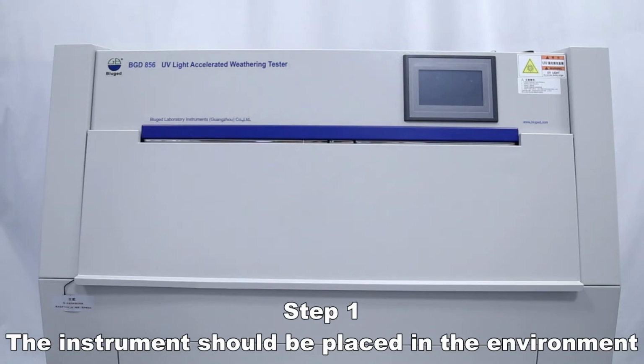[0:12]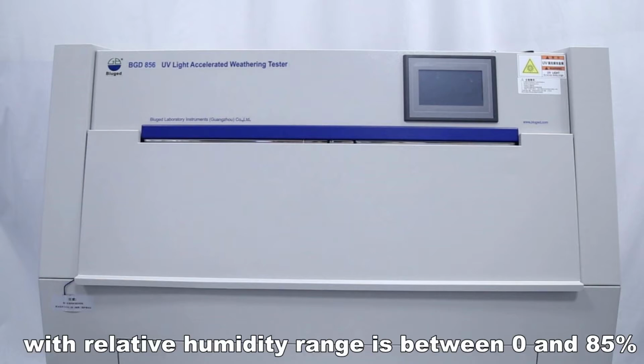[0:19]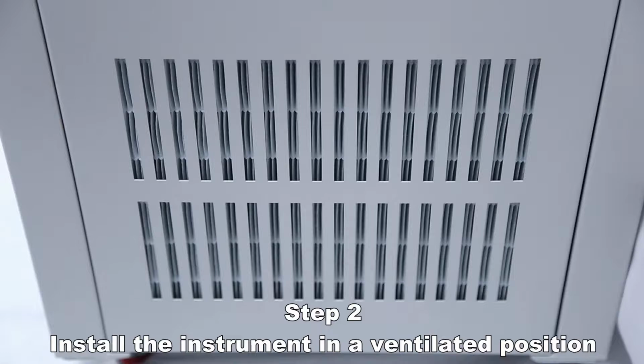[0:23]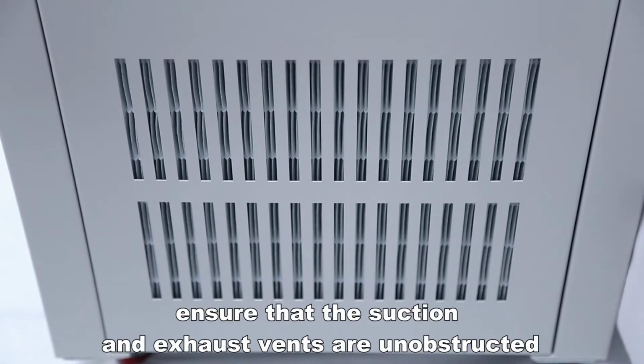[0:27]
The instrument should be placed in an environment whose temperature is between 20 degrees Celsius and 30 degrees Celsius, with relative humidity between 0 and 85%. Install the instrument in a ventilated position. Ensure that the suction and exhaust vents are unobstructed.
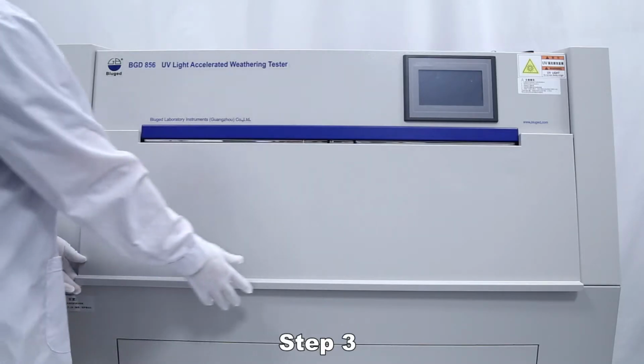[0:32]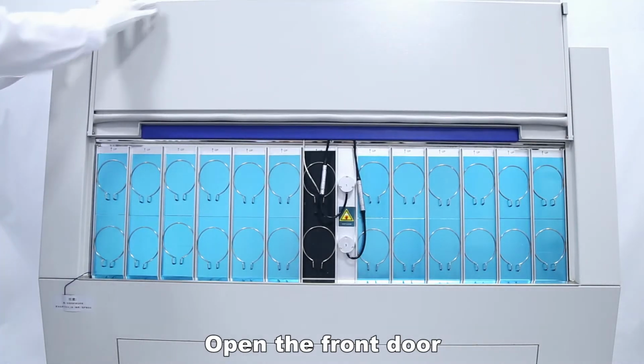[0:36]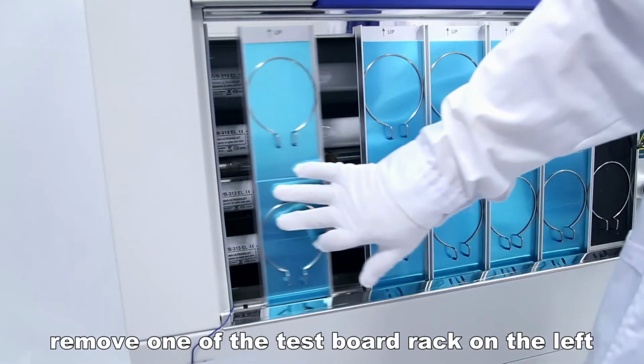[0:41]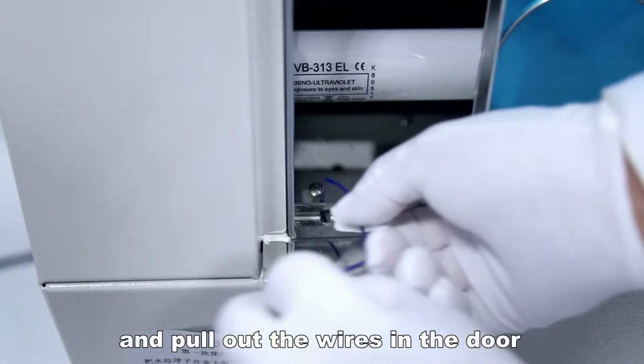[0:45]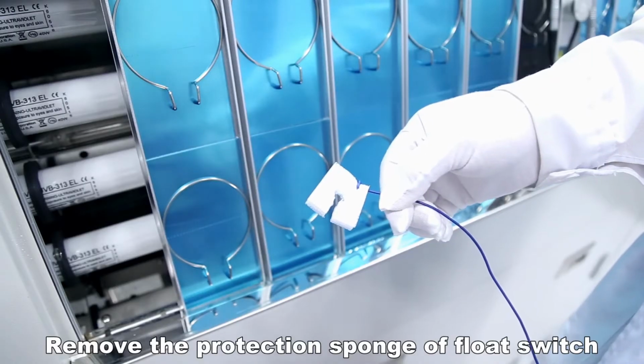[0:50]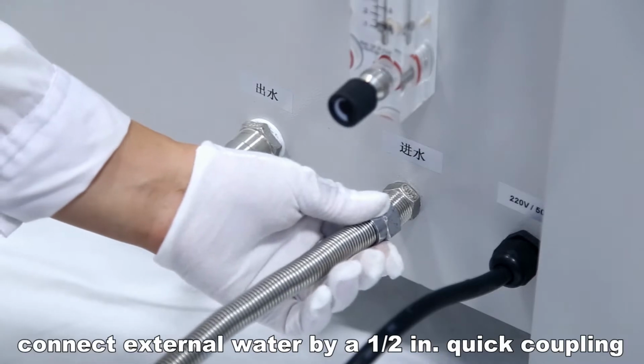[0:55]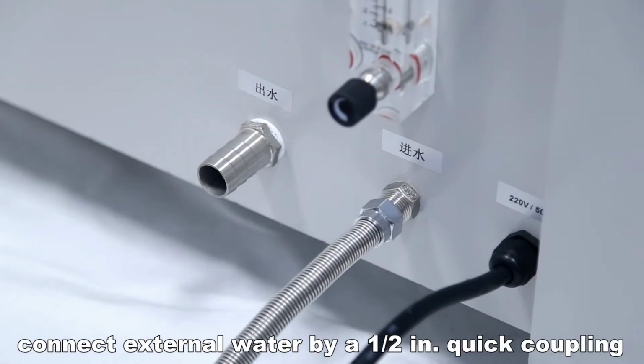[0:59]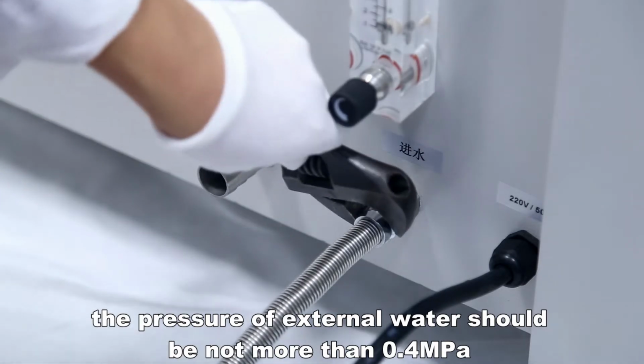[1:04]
Open the front door. Remove one of the test board racks on the left and pull out the wires in the door. Remove the protection sponge of the float switch. Connect the inlet pipe. Connect external water via a 1/2 inch quick coupling. The pressure of external water should be not more than 0.4 MPa.
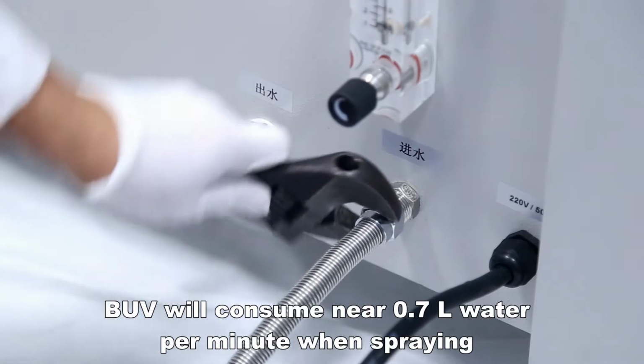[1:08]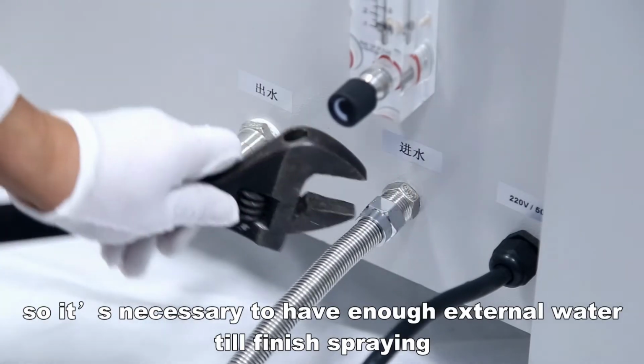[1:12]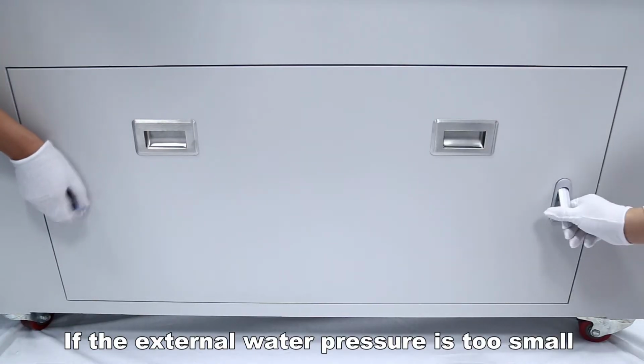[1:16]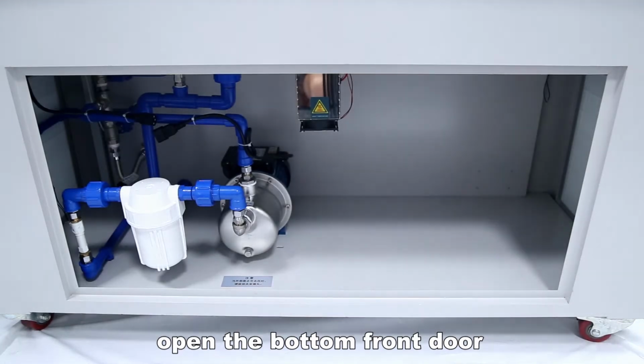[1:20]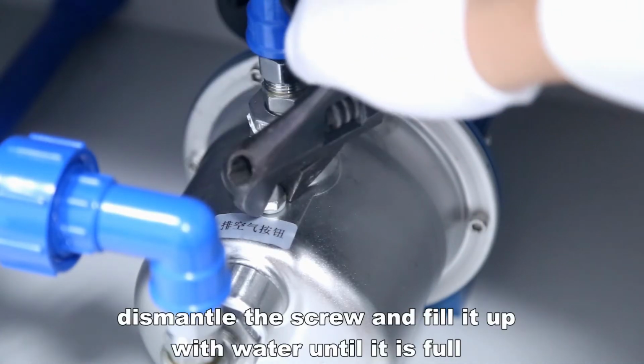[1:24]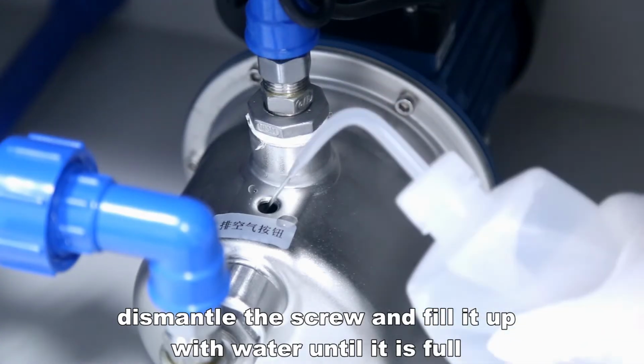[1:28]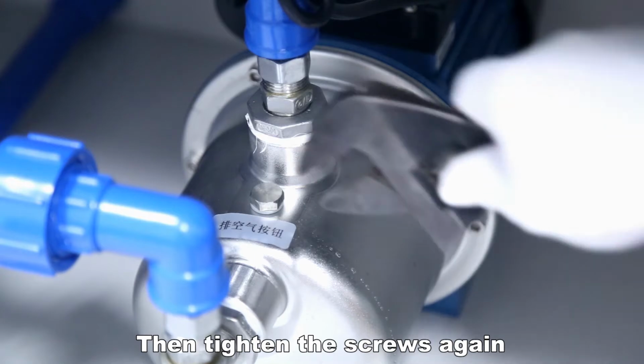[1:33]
The instrument will consume nearly 0.7 liters of water per minute when spraying, so it's necessary to have enough external water until spraying finishes. If the external water pressure is too small, open the bottom front door. Empty all air in the pump before pumping water. Dismantle the screw and fill it up with water until it is full. Then tighten the screws again.
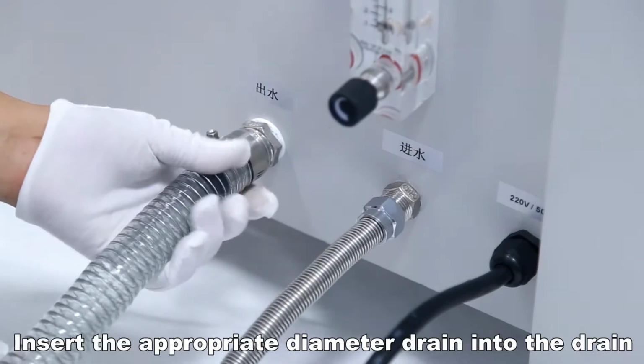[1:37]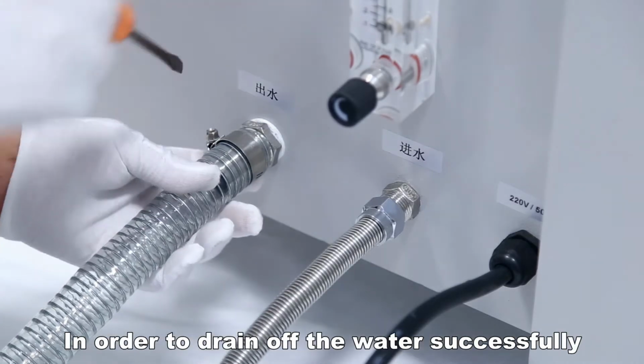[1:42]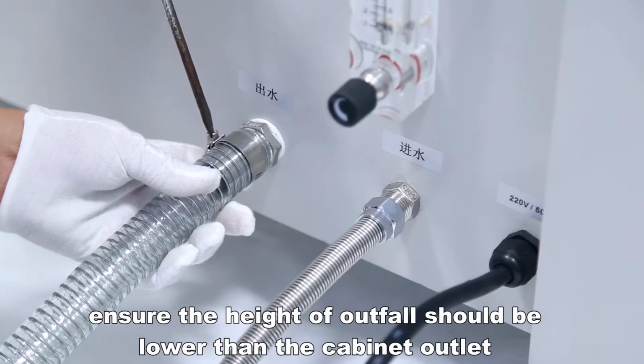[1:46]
Insert a drain pipe of appropriate diameter into the drain in order to drain off the water successfully. Ensure the height of the outfall is lower than the cabinet outlet.
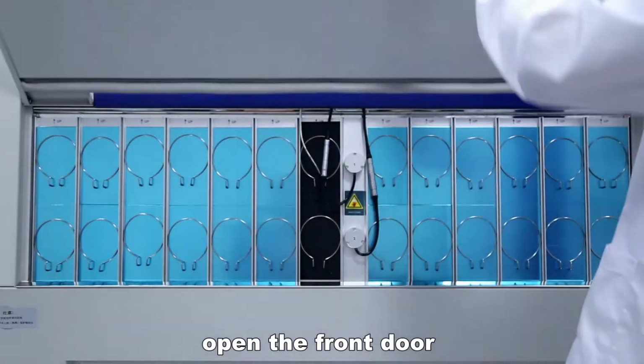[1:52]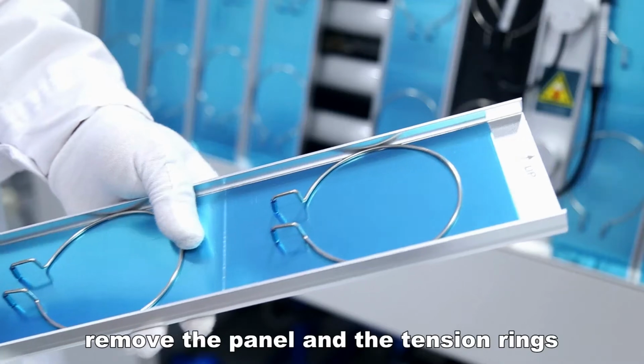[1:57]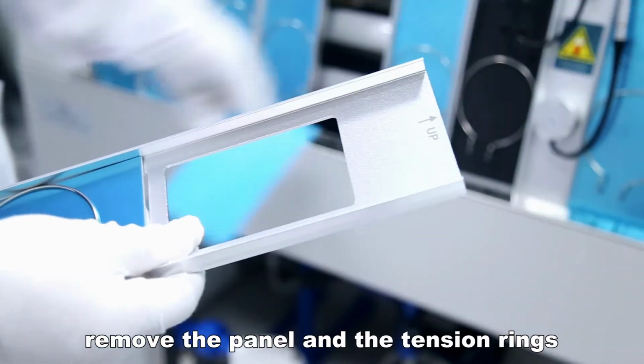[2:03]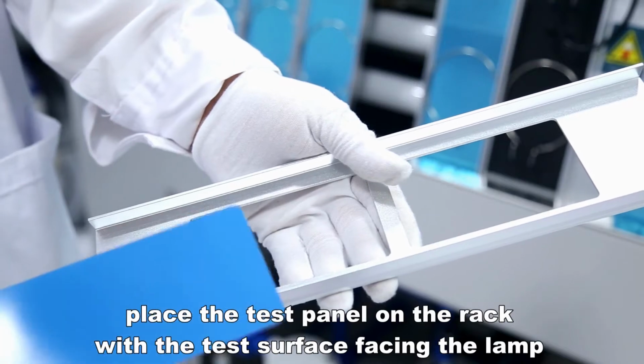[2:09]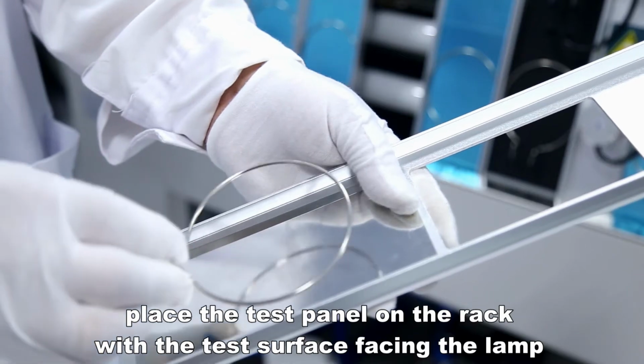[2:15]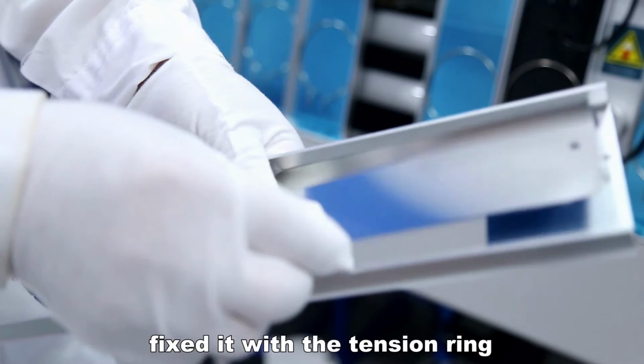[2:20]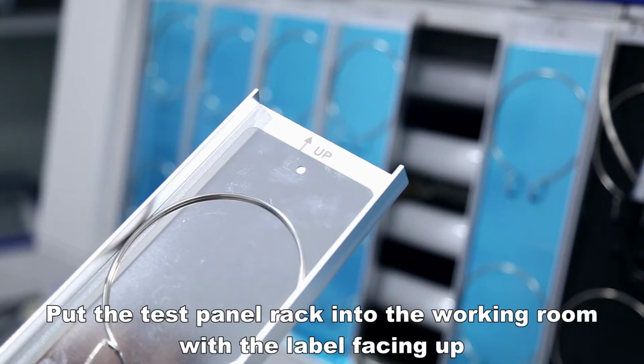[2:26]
Test panel installation. Open the front door. Take out the test panel rack. Remove the panel and the tension rings. Place the test panel on the rack with the test surface facing the lamp. Fix it with the tension ring. Put the test panel rack into the working room with the label facing up.
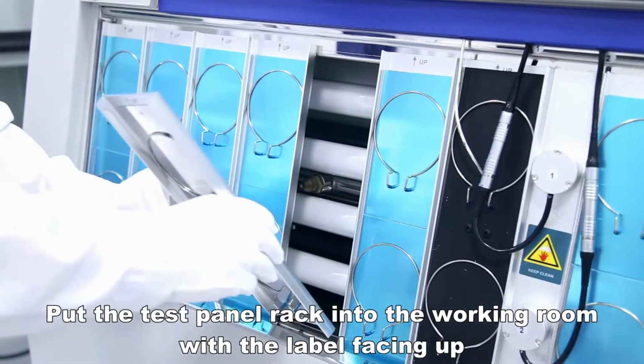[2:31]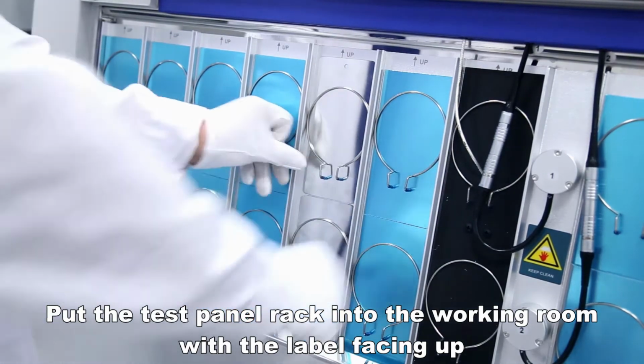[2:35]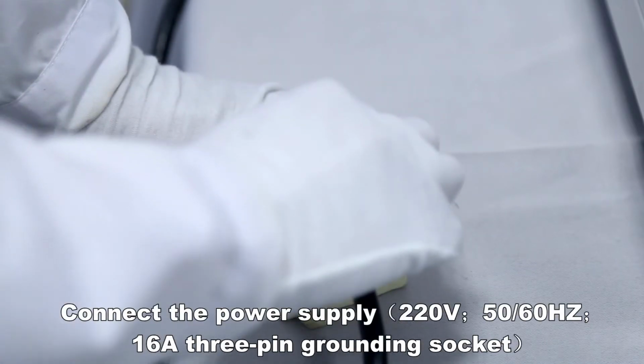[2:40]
After all the test boards are installed, connect the power supply. Make sure the power supply is well grounded.
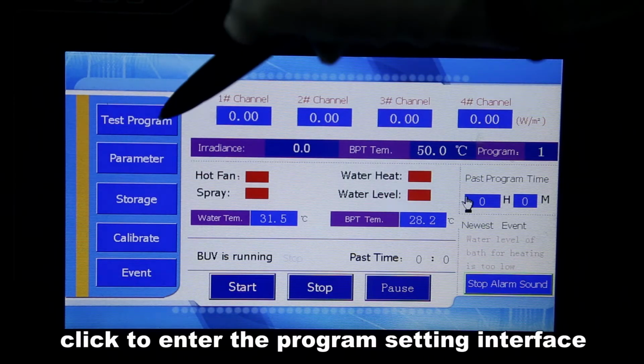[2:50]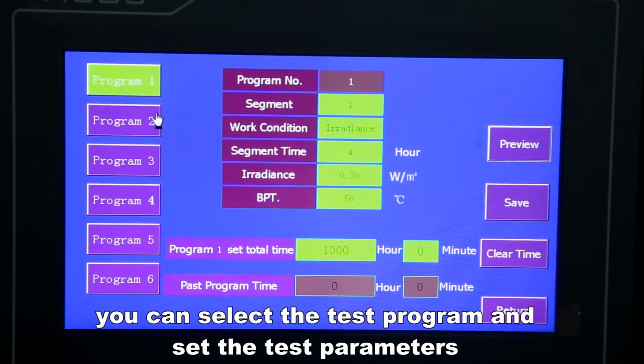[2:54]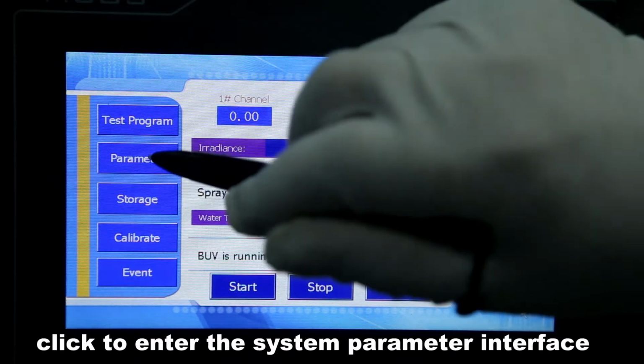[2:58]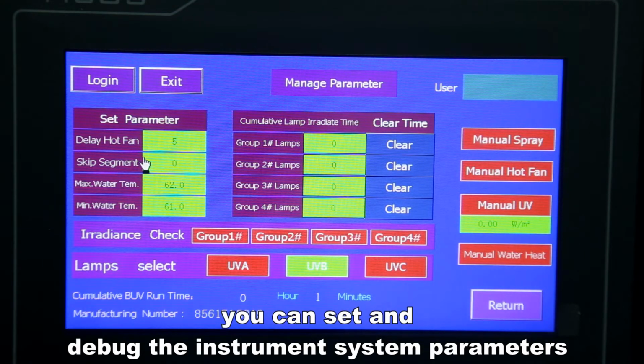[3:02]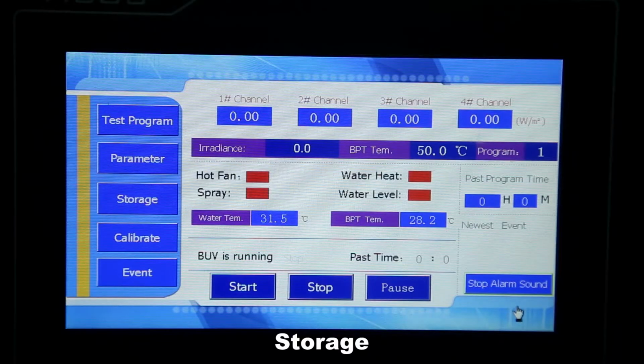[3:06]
Test program. Click to enter the program setting interface. You can select the test program and set the test parameters. Parameter. Click to enter the system parameter interface. You can set and debug the instrument system parameters, and you need to operate under the guidance of professionals.
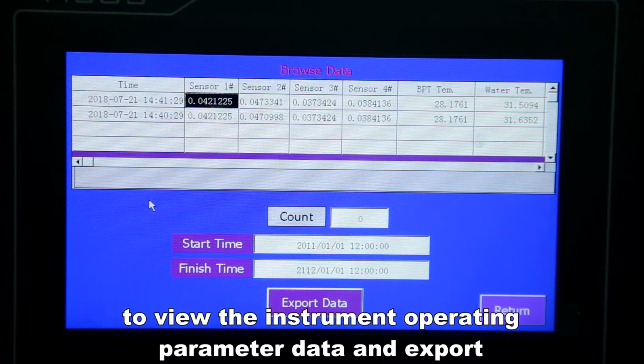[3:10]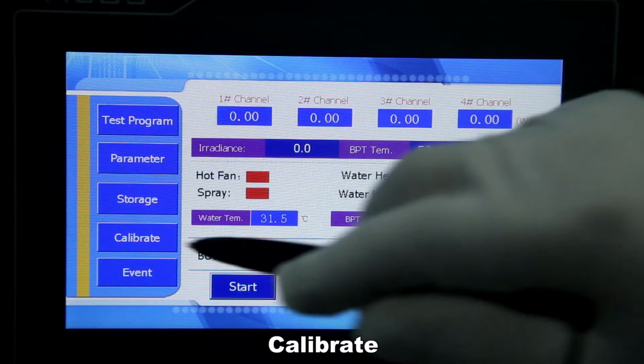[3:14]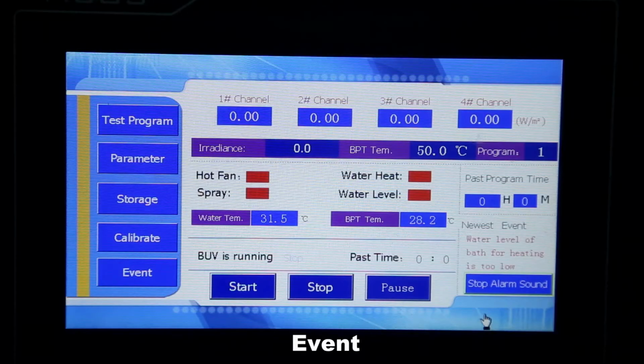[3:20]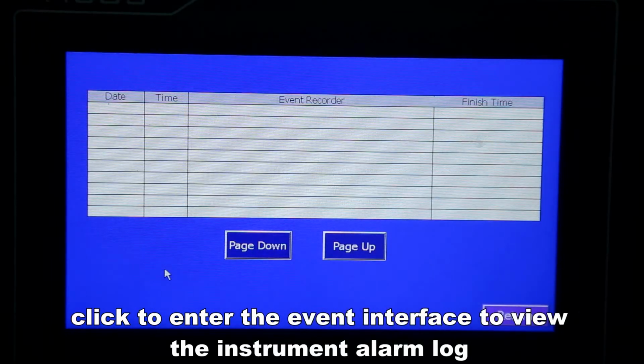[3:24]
Storage. Click to enter the data storage interface to view the instrument operating parameter data and export. Calibrate. Click to enter the calibration interface for irradiance and blackboard temperature calibration. Event. Click to enter the event interface to view the instrument alarm log.
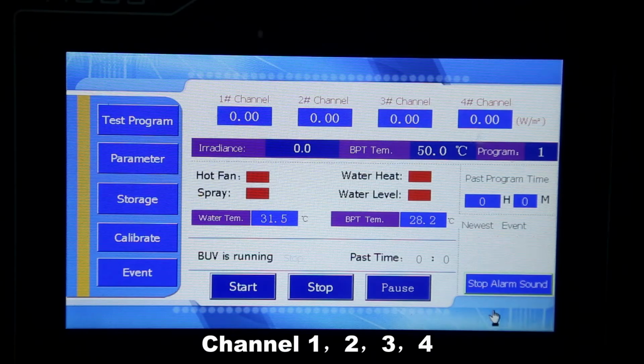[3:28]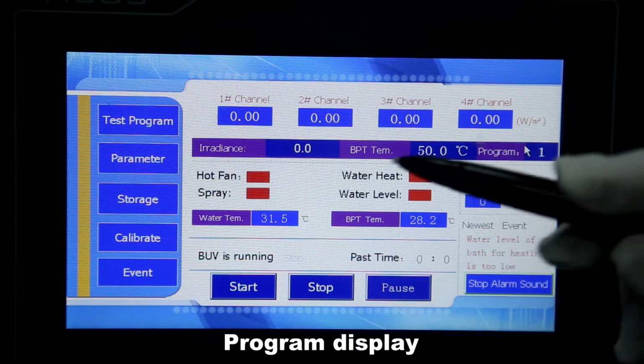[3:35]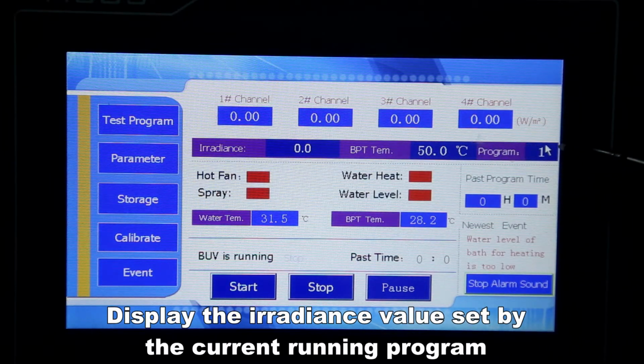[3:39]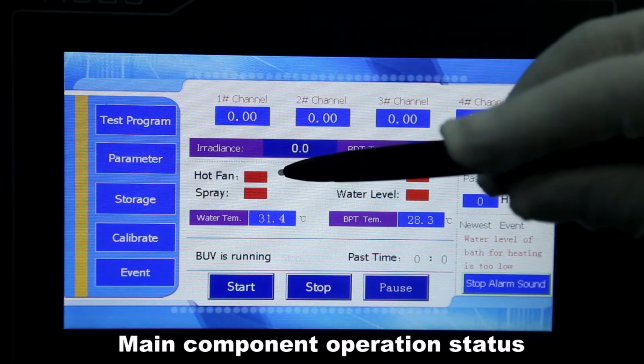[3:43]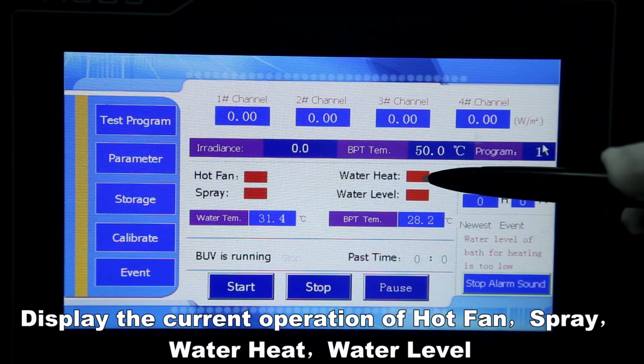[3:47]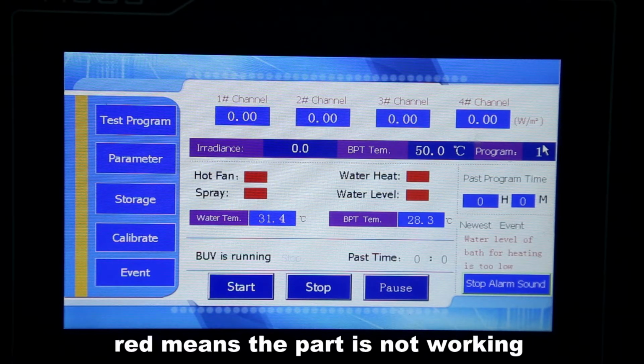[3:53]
Channel 1, 2, 3, 4. Display real-time irradiance values for 4 different locations in the current studio. Program. Display the irradiance value set by the current running program, the temperature value, and the currently selected program number. Main component operation status. Display the current operation of hot fan, spray, water heat, and water level. Green means the part is working. Red means the part is not working.
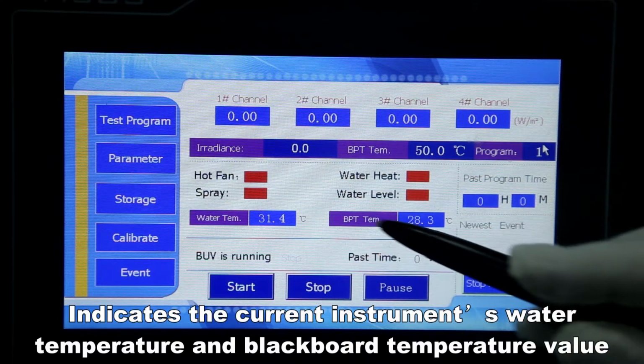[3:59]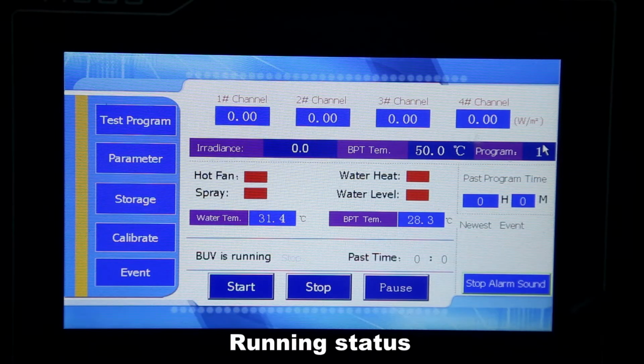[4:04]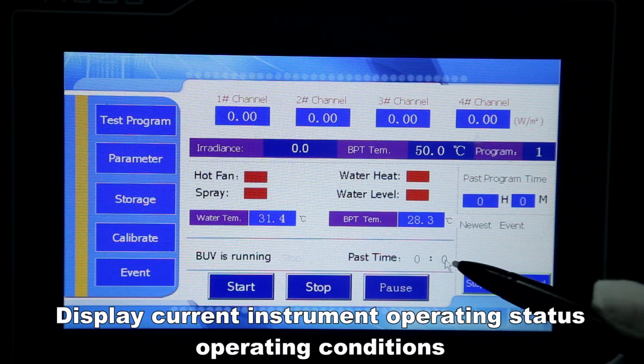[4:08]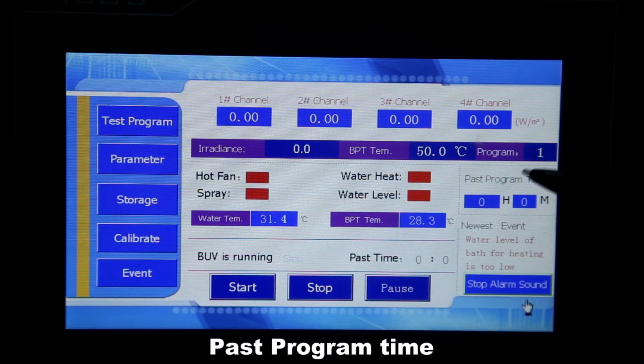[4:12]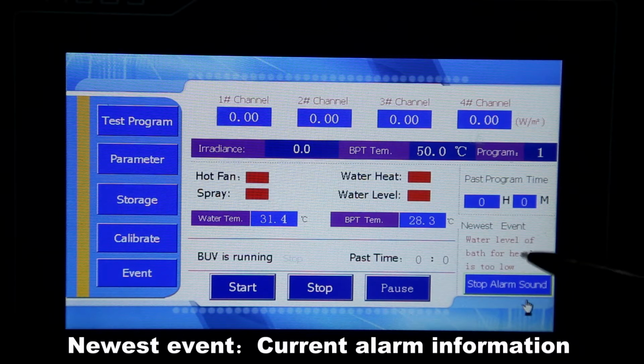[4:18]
Temperature. Display indicates the current instrument water temperature and blackboard temperature value. Running status. Display current instrument operating status, operating conditions, and the time that this condition has been running. Past program time indicates the time the test has been run. Newest event. Current alarm information.
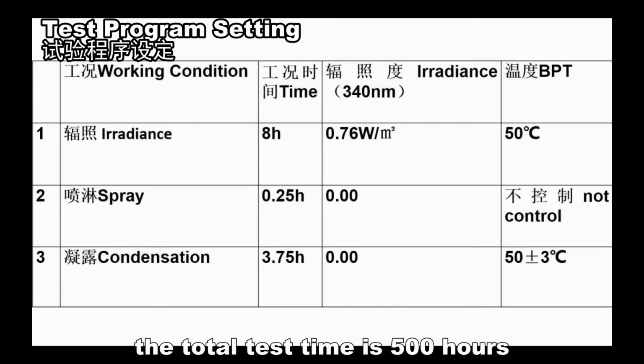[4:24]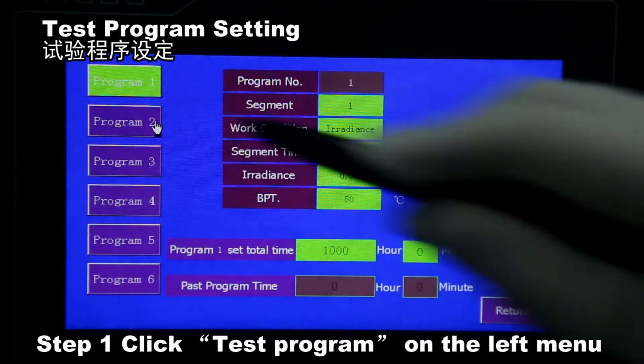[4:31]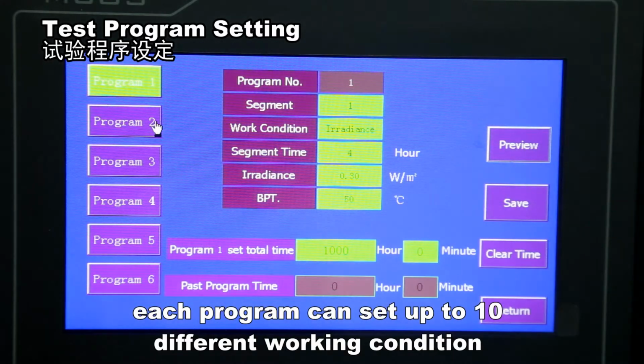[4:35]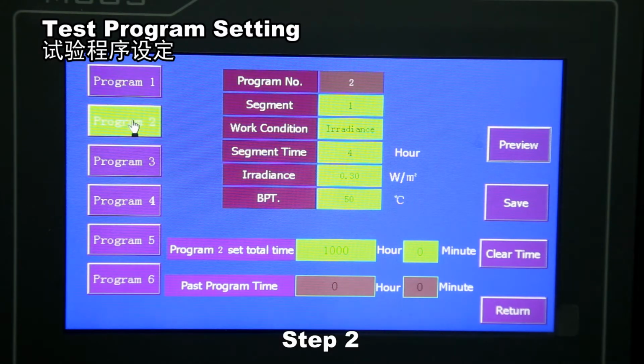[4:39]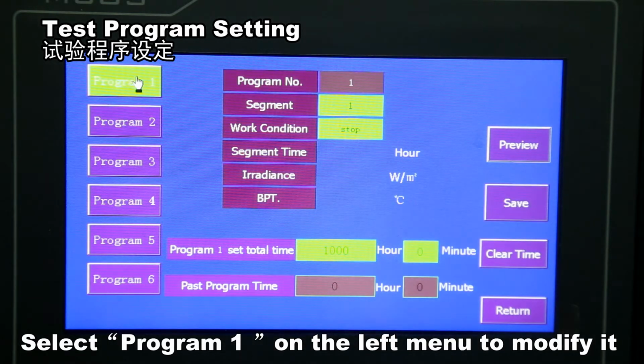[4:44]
Now set up a test which is divided into 3 working conditions. The total test time is 500 hours. Click test program on the left menu. The instrument can store up to 6 test programs. Each program can set up to 10 different working conditions. Select program 1 on the left menu to modify it.
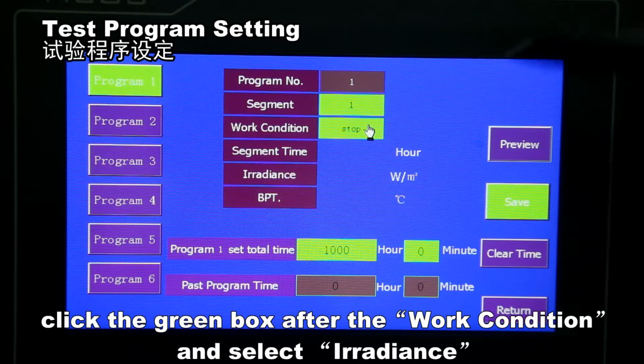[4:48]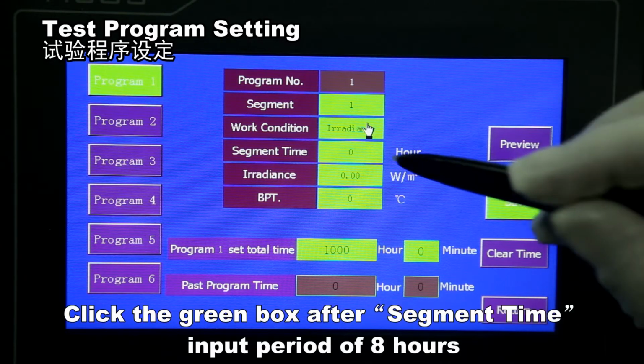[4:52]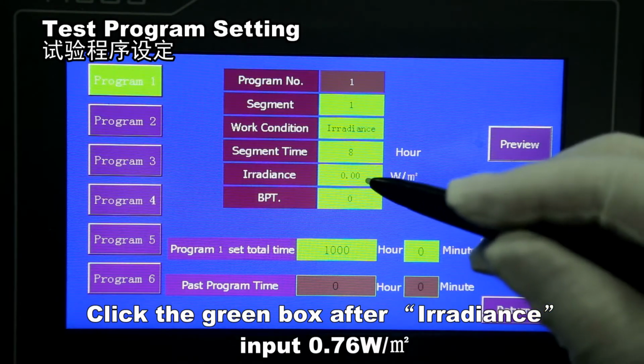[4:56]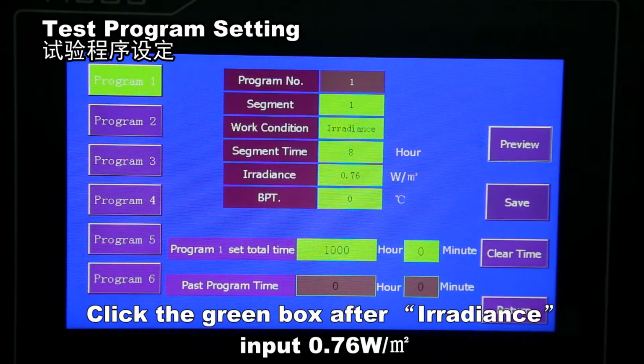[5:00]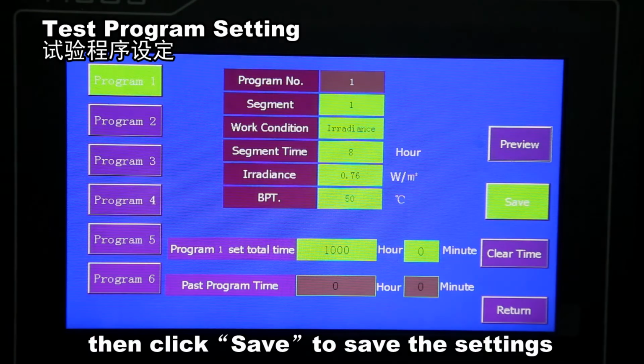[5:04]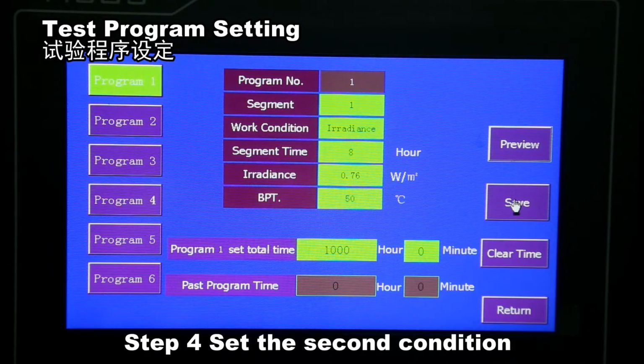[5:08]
Set the first condition. Click the green box after the work condition and select irradiance. Click the green box after segment time and input a period of 8 hours. Click the green box after irradiance and input 0.76 W/m2. Click the green box after BPT, input 50 degrees Celsius, then click save to save the setting.
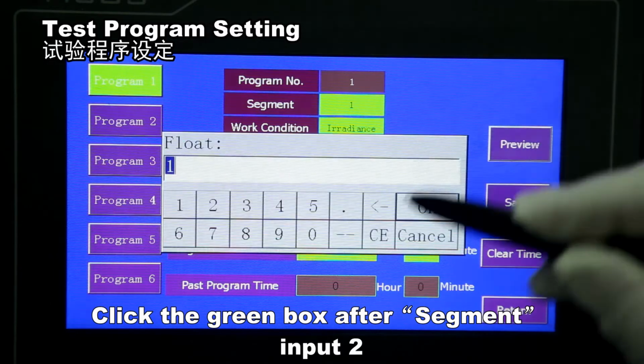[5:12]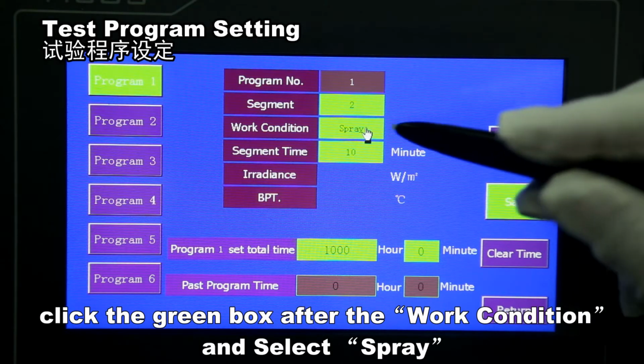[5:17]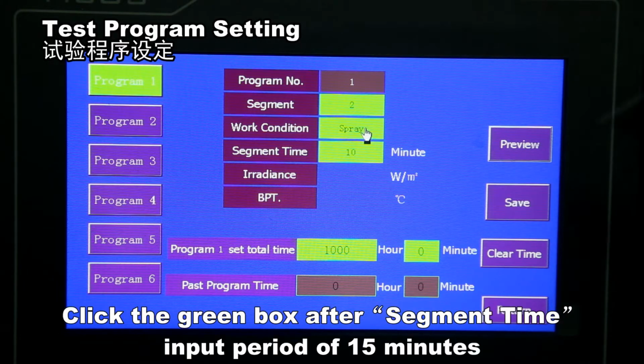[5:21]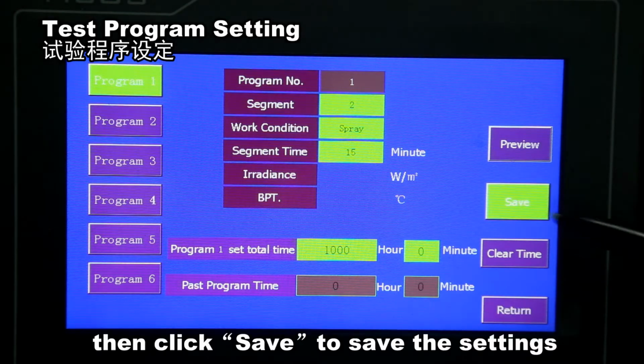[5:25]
Set the second condition. Click the green box after segment and input 2. Click the green box after the work condition and select spray. Click the green box after segment time and input a period of 15 minutes, then click save to save the setting.
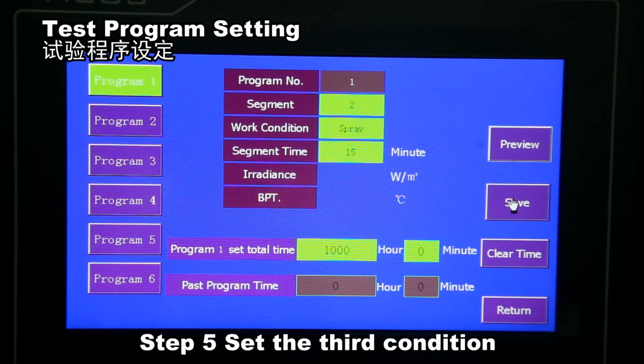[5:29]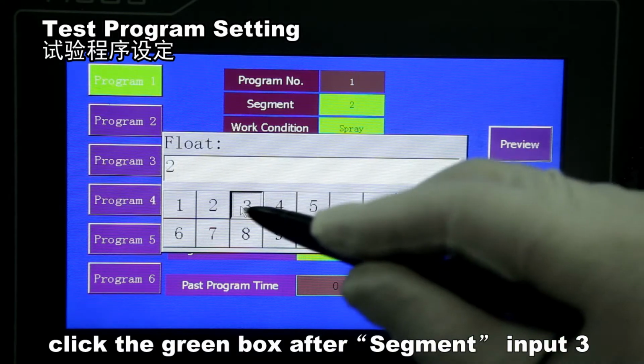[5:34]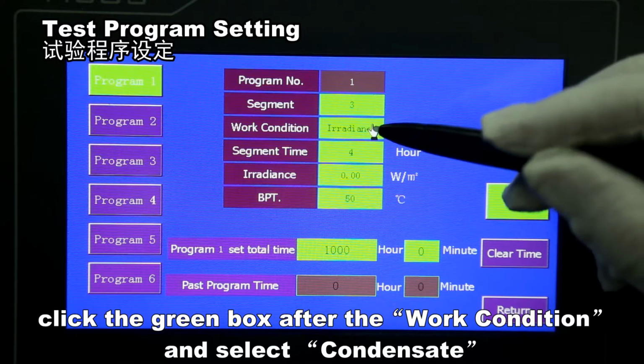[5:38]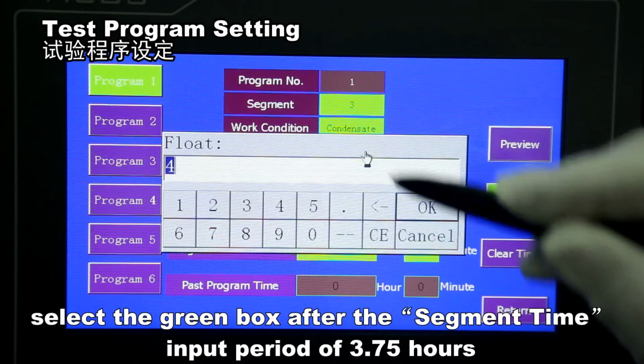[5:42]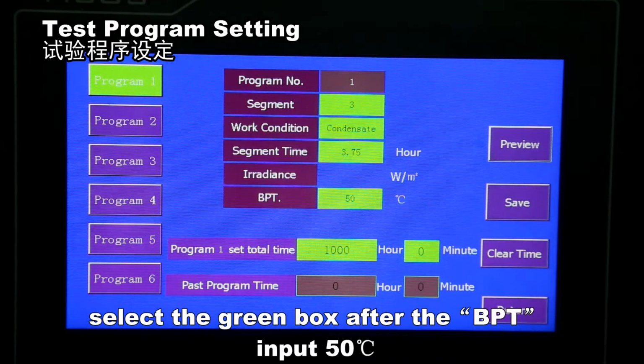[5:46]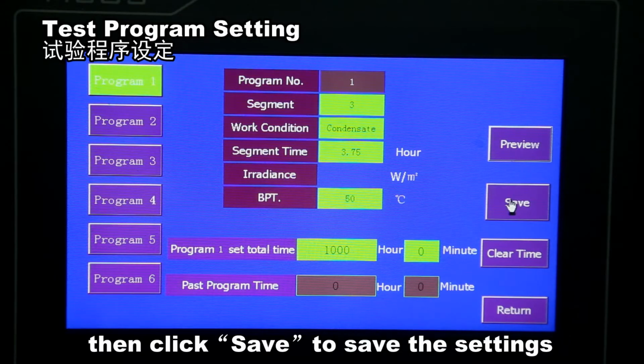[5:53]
Set the third condition. Click the green box after segment and input 3. Click the green box after the work condition and select condensate. Select the green box after the segment time and input a period of 3.75 hours. Select the green box after BPT, input 50 degrees Celsius, then click save to save the setting.
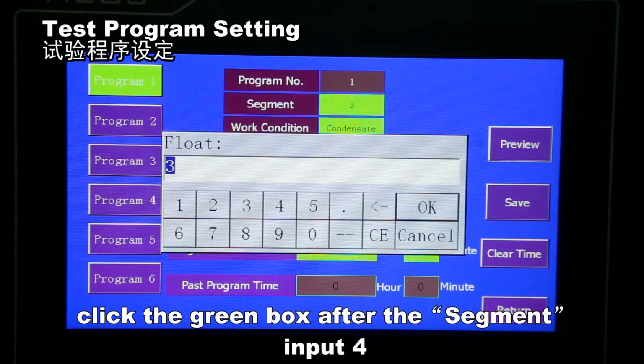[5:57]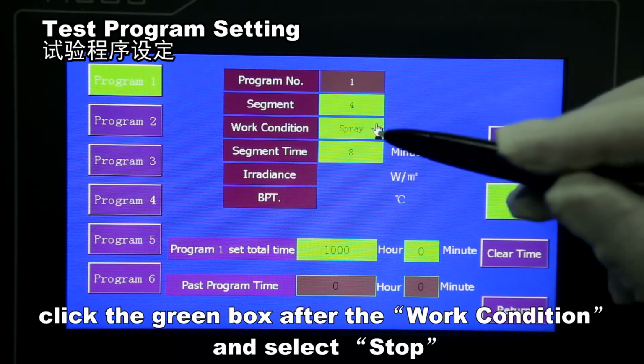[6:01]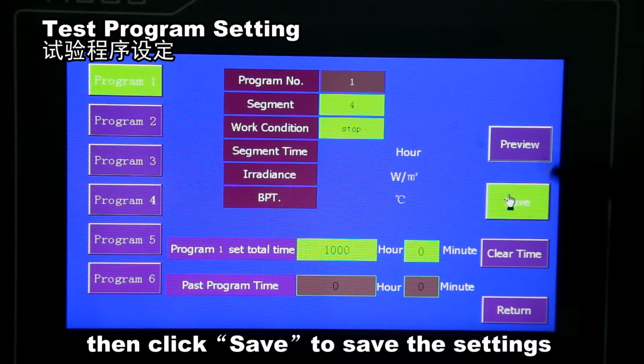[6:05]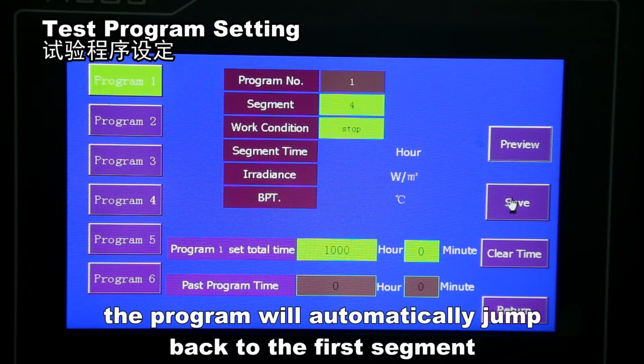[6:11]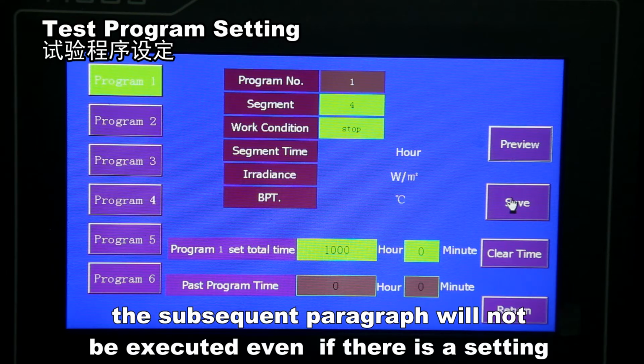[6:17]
Set the termination segment. Click the green box after the segment and input 4. Click the green box after the work condition and select stop, then click save to save the setting. When the termination segment is set, the program will automatically jump back to the first segment and retest. After the program runs to the termination segment, the subsequent segments will not be executed even if there are settings.
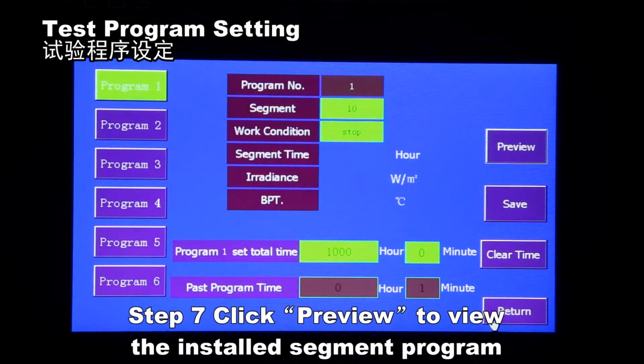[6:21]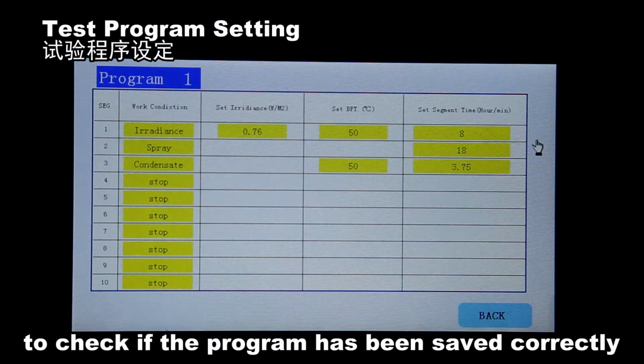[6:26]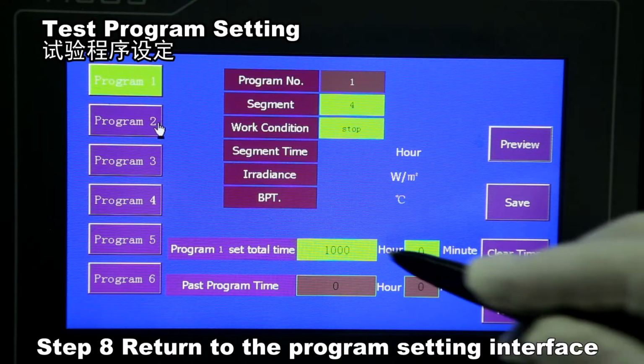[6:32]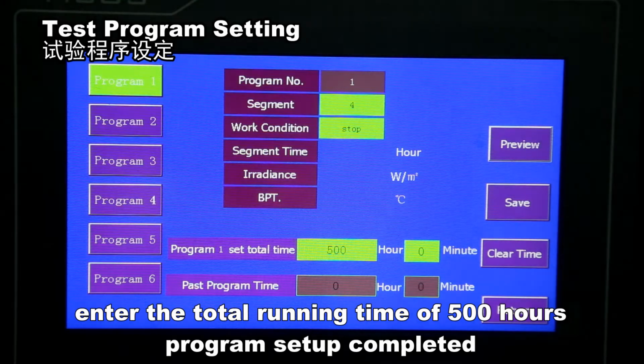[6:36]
Click preview to view the installed segment program to check if the program has been saved correctly. Return to the program setting interface. Enter the total running time of 500 hours. Program setup completed.
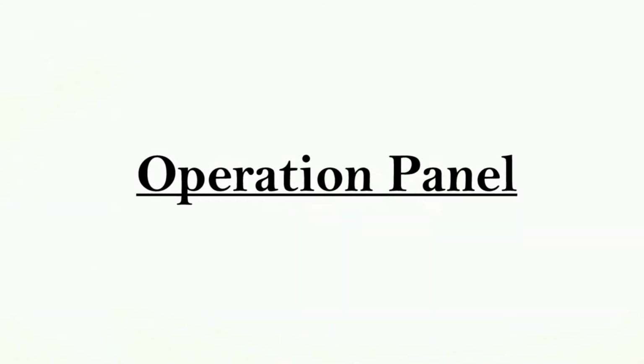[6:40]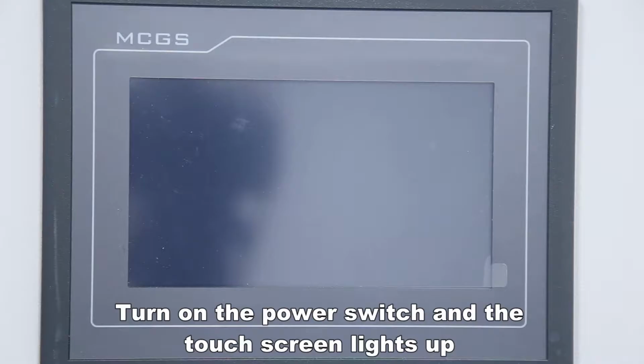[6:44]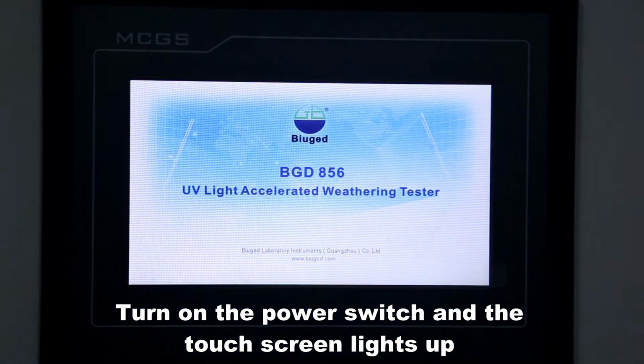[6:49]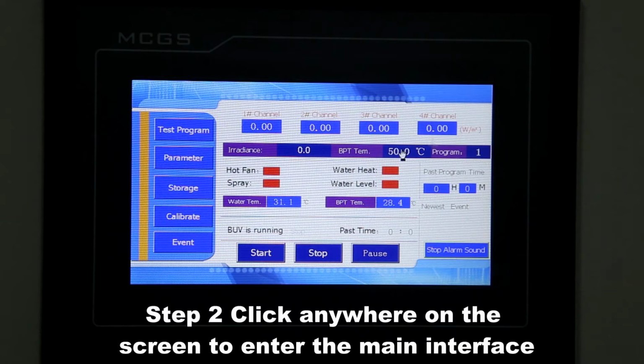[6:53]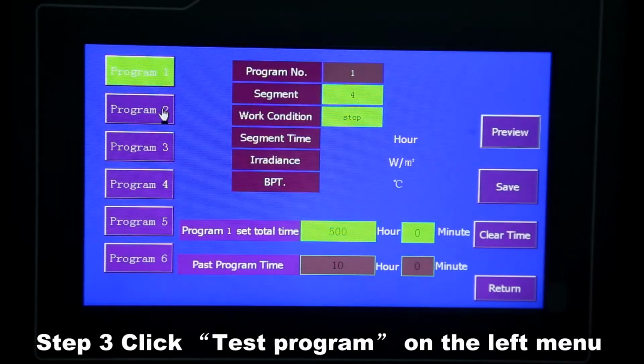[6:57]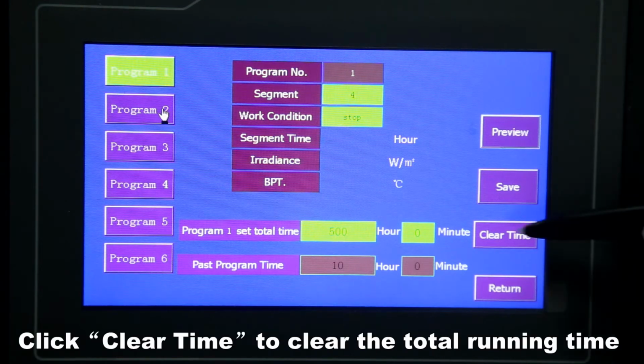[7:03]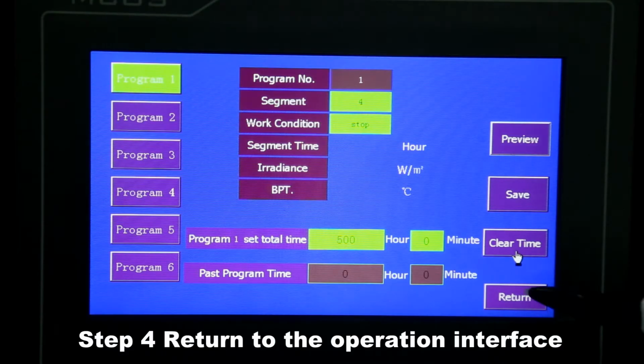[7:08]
Turn on the power switch and the touch screen lights up. Click anywhere on the screen to enter the main interface. Click test program on the left menu. After clicking, the screen allows you to set up the test program. Click clear time to clear the total running time. Return to the operation interface.
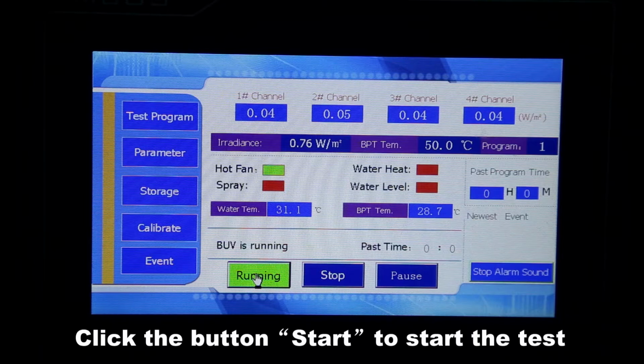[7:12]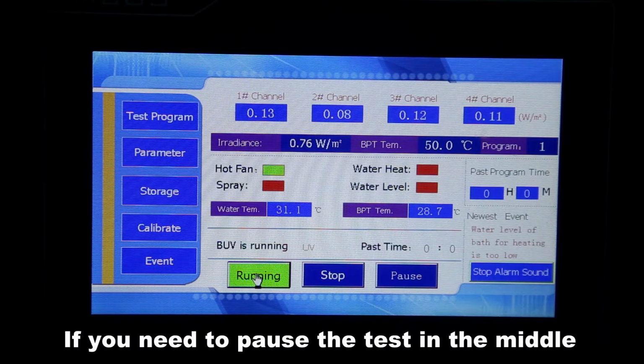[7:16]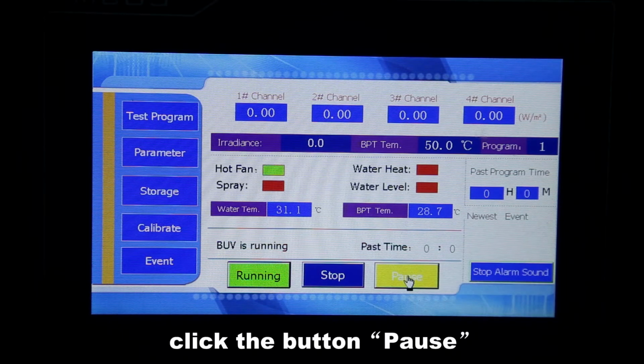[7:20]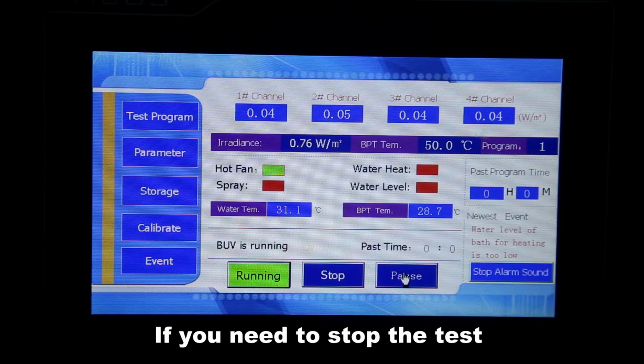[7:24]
Click the start button to start the test. The actual values of the irradiance and BPT will slowly rise to the set values. If you need to pause the test in the middle, click the pause button. Then click pause again to run again. If you need to stop the test, click stop.
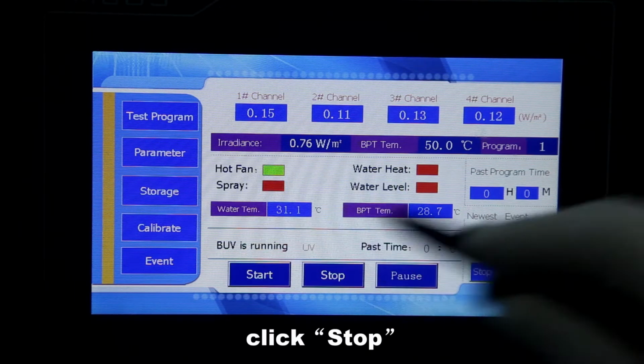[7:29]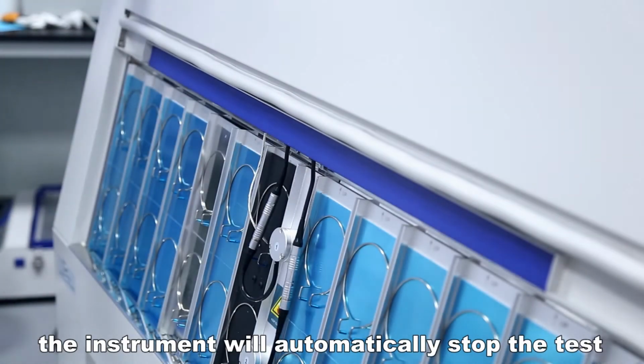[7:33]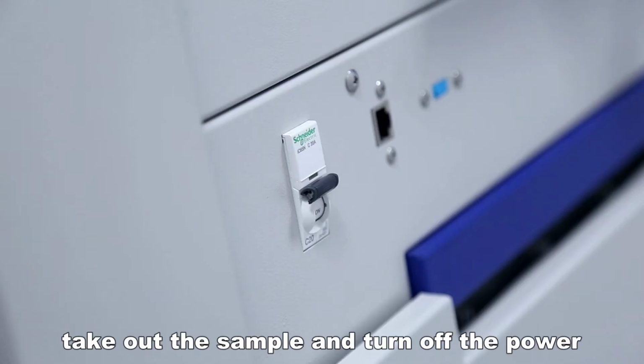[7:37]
When the test time reaches the set value, the instrument will automatically stop the test. Take out the sample and turn off the power.
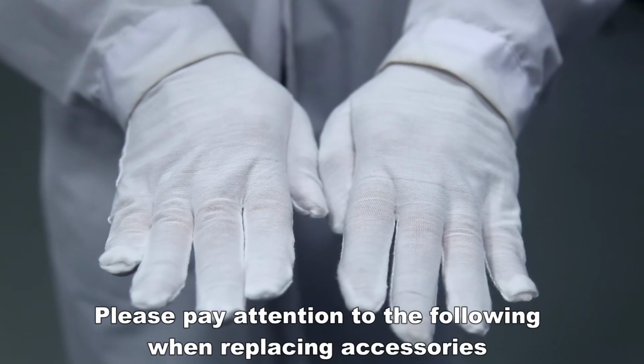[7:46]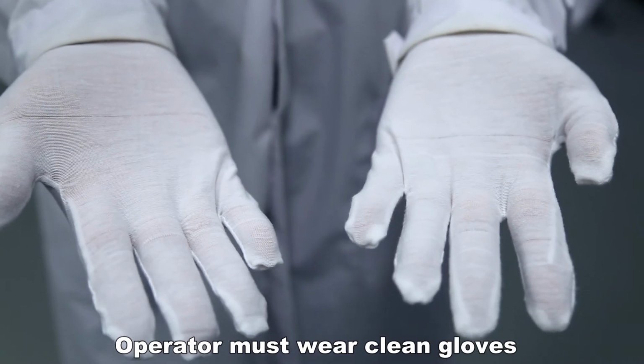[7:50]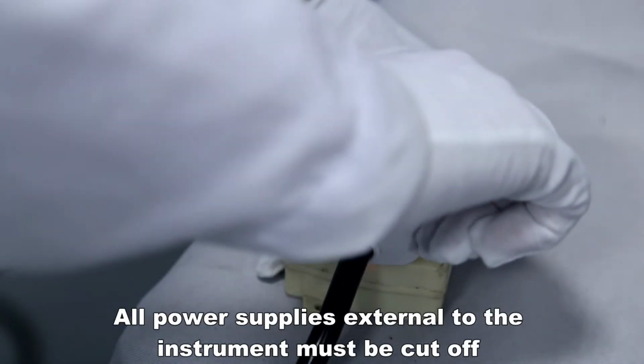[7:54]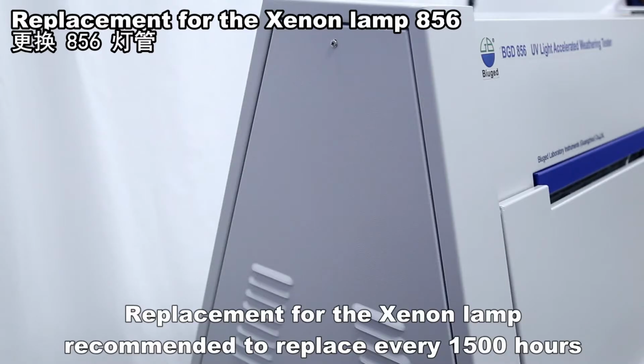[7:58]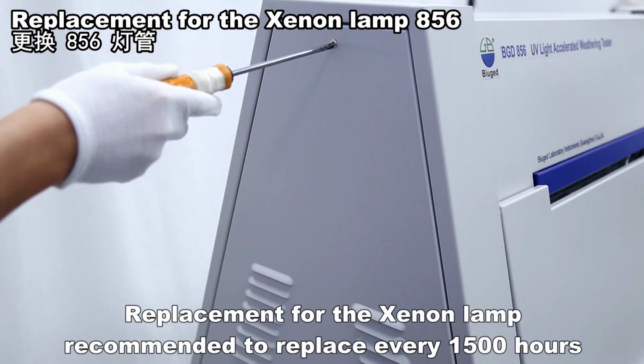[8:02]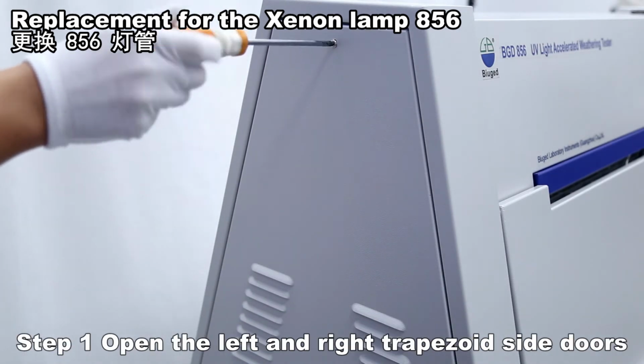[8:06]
Please pay attention to the following. When replacing accessories, the operator must wear clean gloves. All power supplies external to the instrument must be cut off. Replacement for the Xenon lamp is recommended every 1,500 hours. Open the left and right trapezoid side doors.
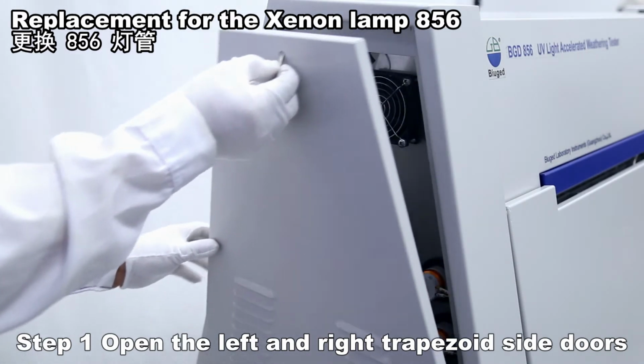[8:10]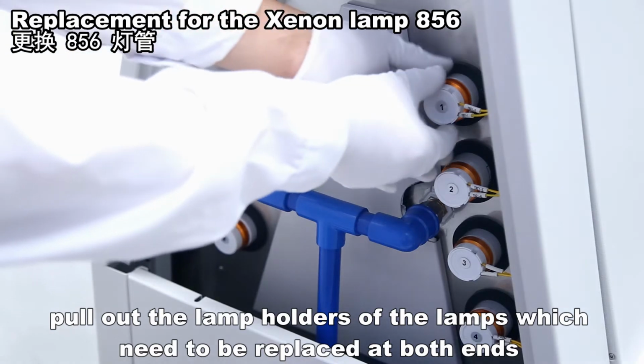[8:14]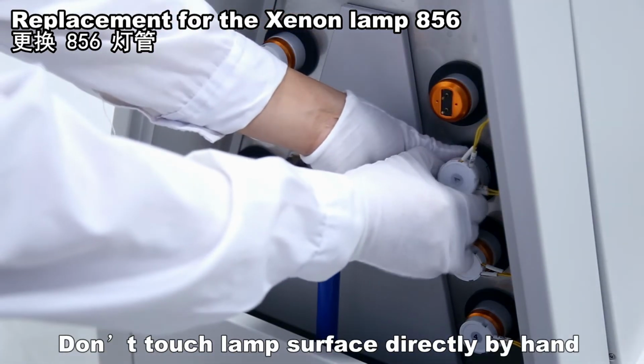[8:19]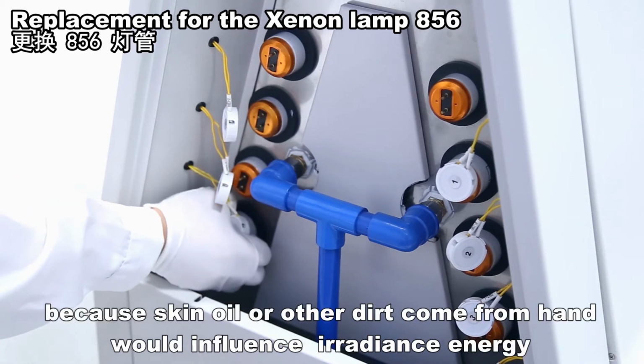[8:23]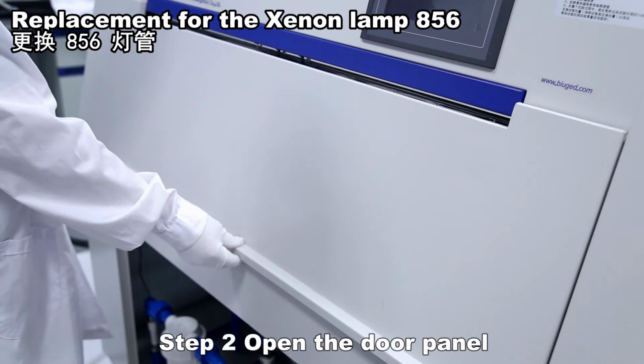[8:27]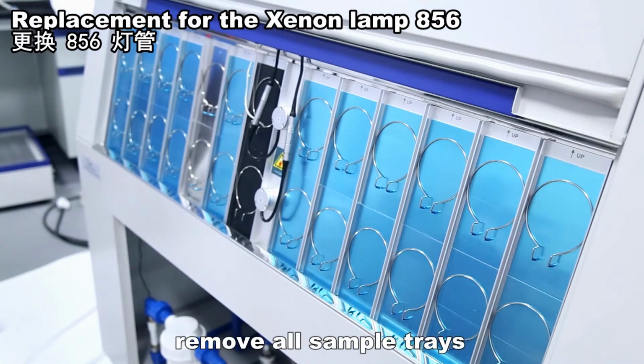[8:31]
Pull out the lamp holders of the lamps which need to be replaced at both ends. Don't touch the lamp surface directly by hand, because skin oil or other dirt from the hand would influence irradiance energy. Open the door panel. Remove all sample trays.
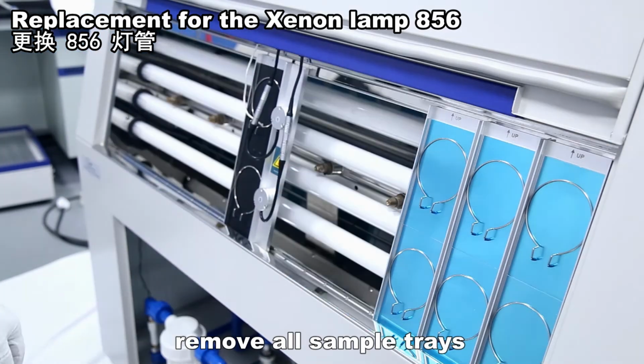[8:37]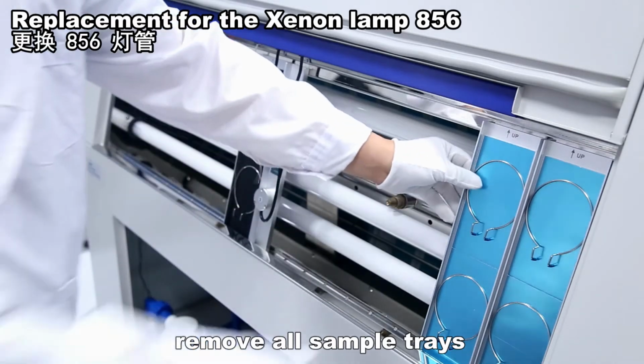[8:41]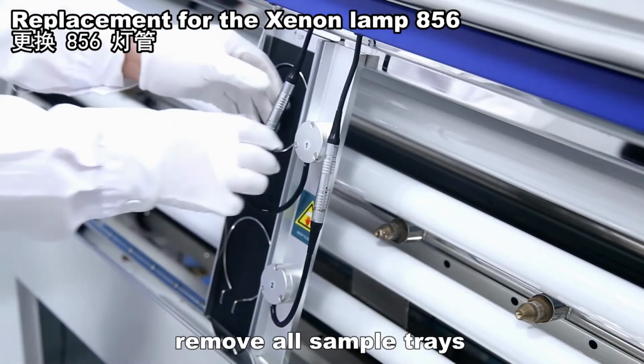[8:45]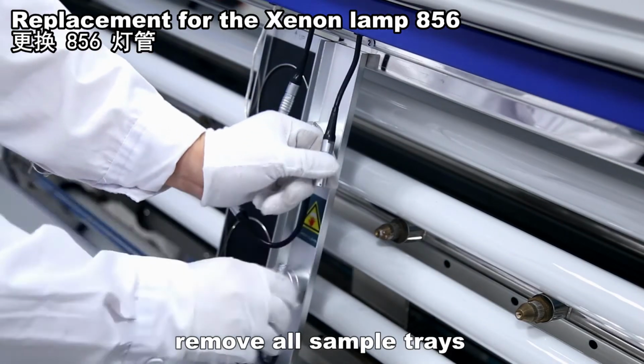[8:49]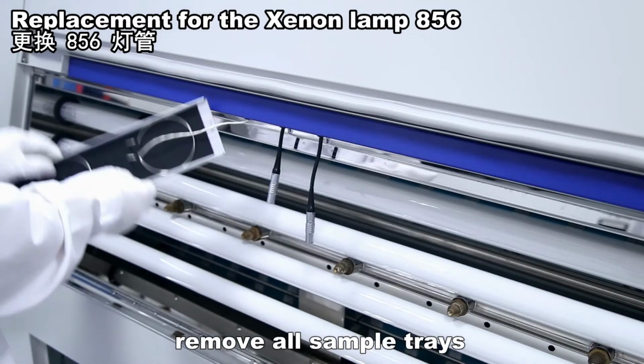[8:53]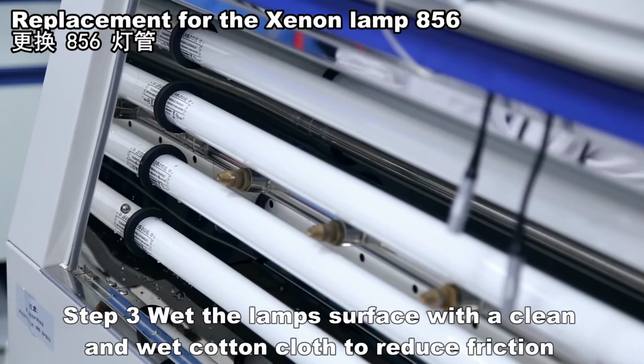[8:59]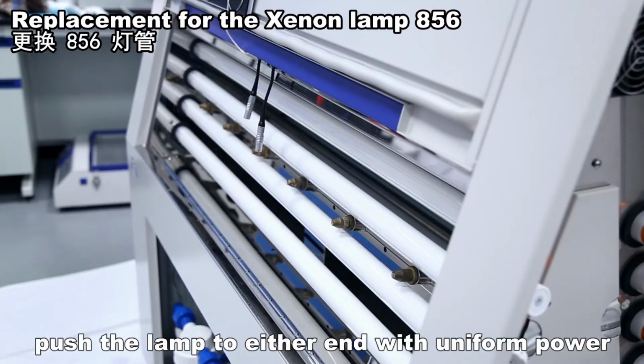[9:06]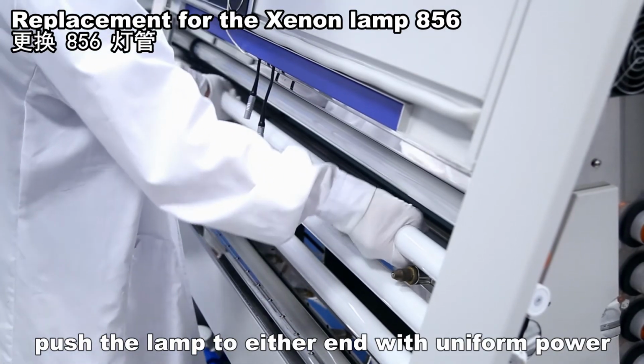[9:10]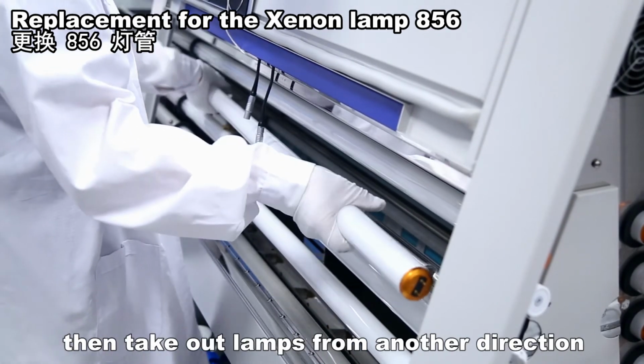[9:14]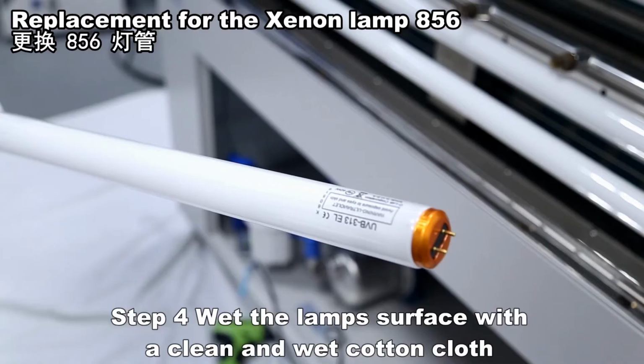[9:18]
Wet the lamp's surface with a clean, wet cotton cloth to reduce friction. Push the lamp to either end with uniform power. Then take out the lamps from the other direction. Wet the lamp's surface with a clean, wet cotton cloth.
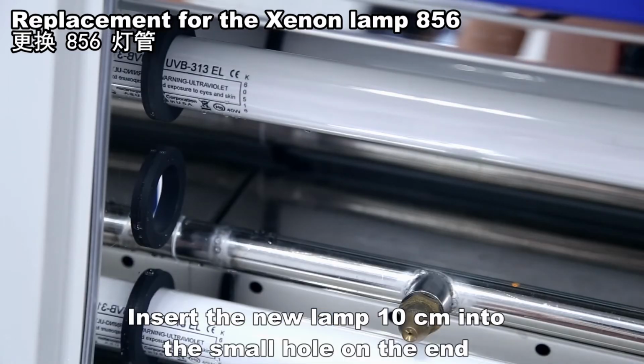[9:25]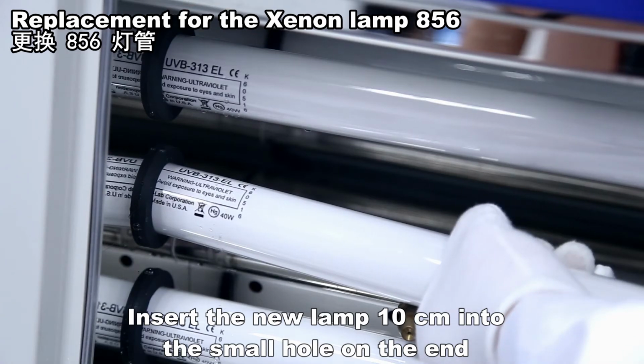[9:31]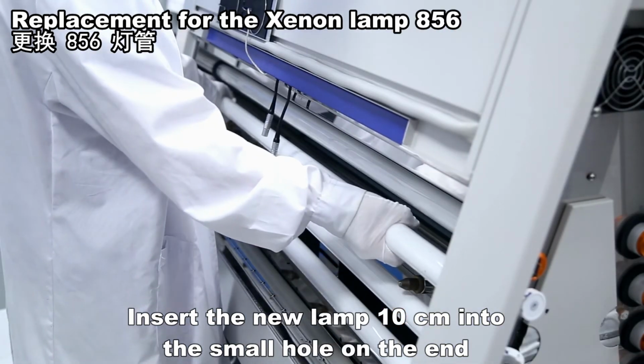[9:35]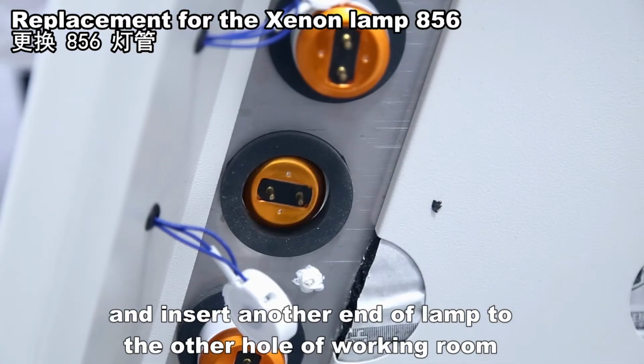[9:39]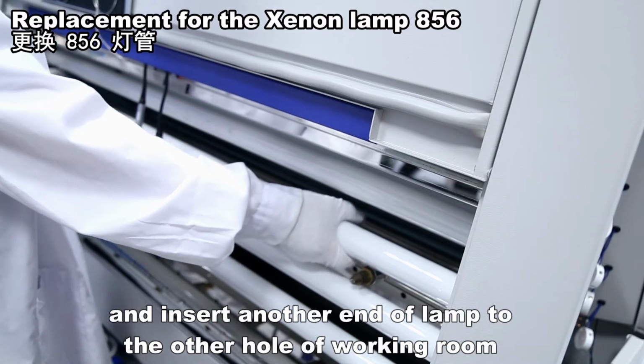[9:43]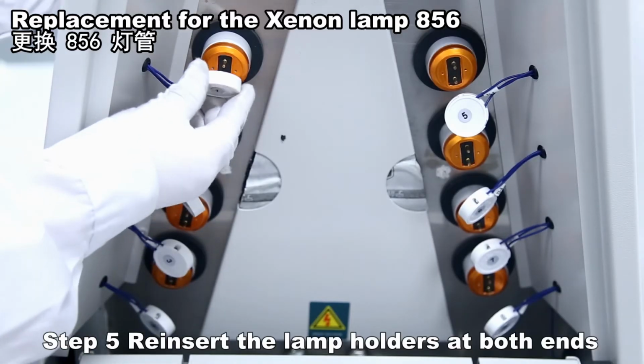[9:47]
Insert the new lamp 10 cm into the small hole on the end, and insert the other end of the lamp into the other hole of the working room. Reinsert the lamp holders at both ends.
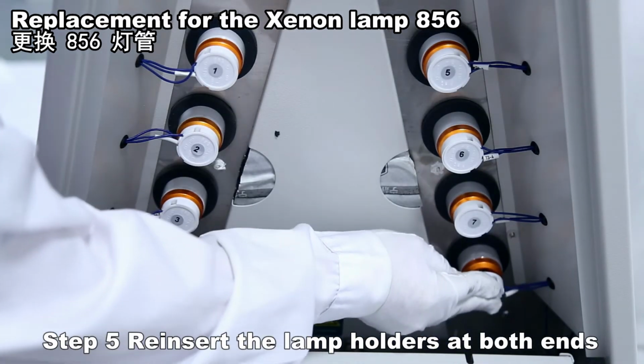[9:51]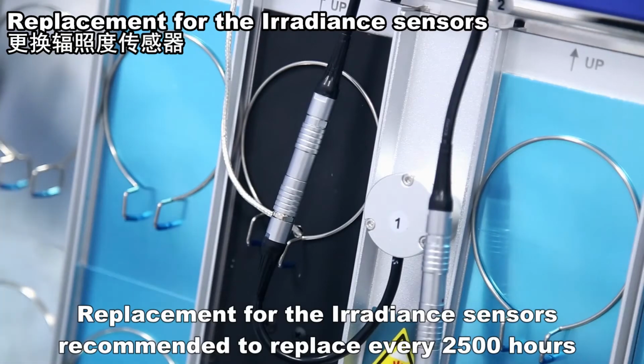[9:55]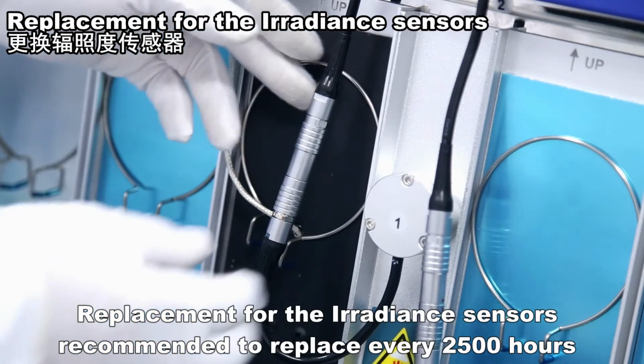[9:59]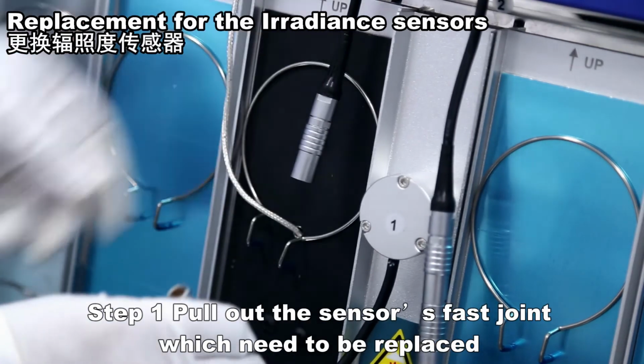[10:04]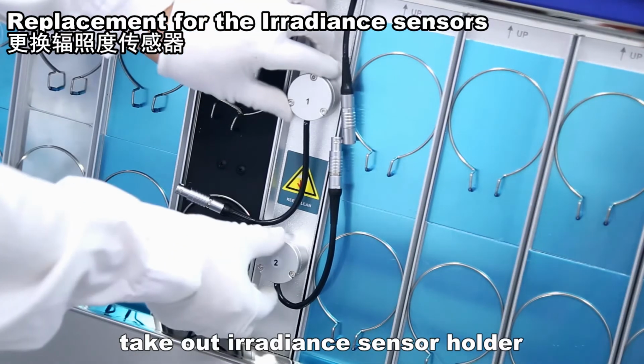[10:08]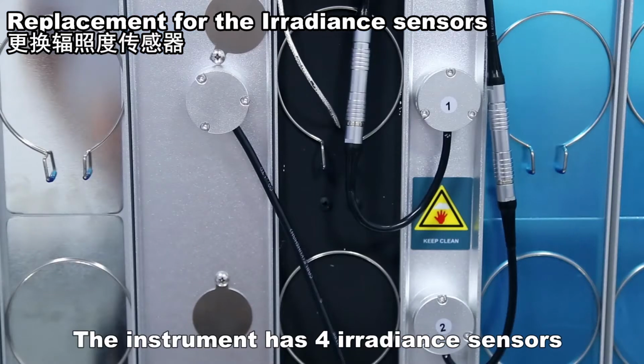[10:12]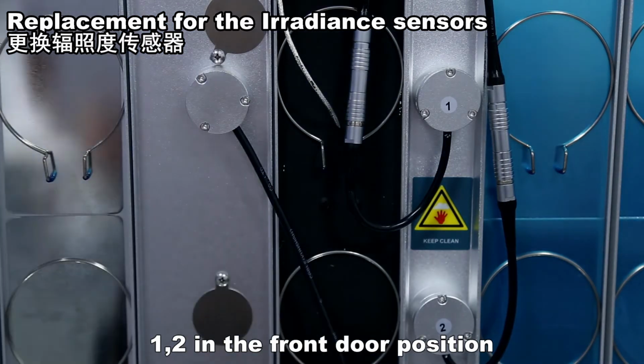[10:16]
Replacement for the irradiance sensors is recommended every 2,500 hours. Pull out the sensor fast joint which needs to be replaced. Take out an irradiance sensor holder. The instrument has four irradiance sensors: 1-2 in the front door position and 3-4 in the rear door position.
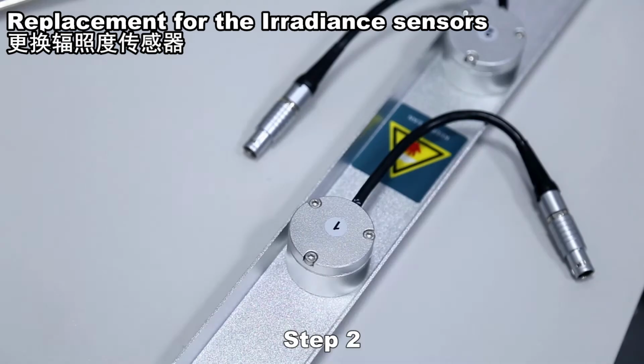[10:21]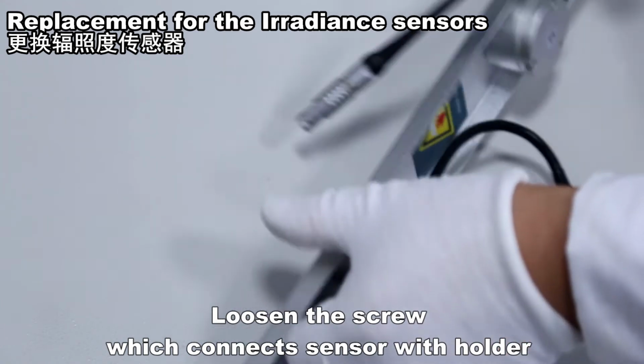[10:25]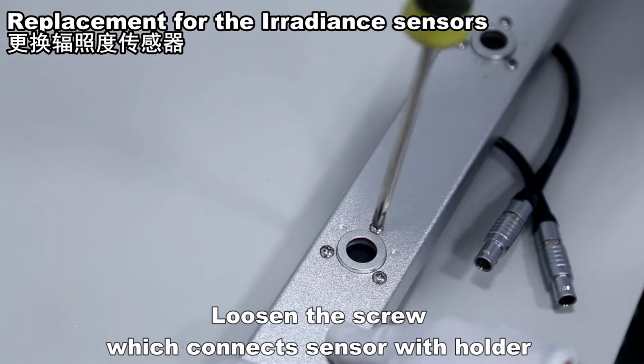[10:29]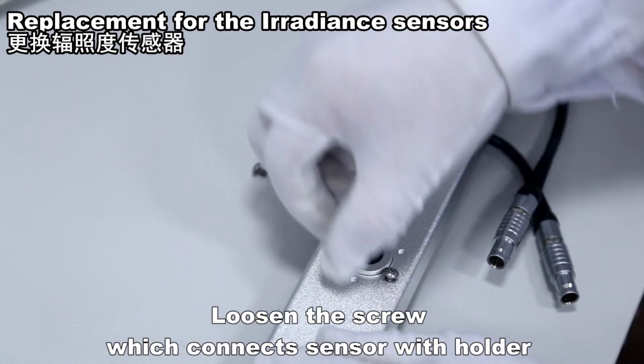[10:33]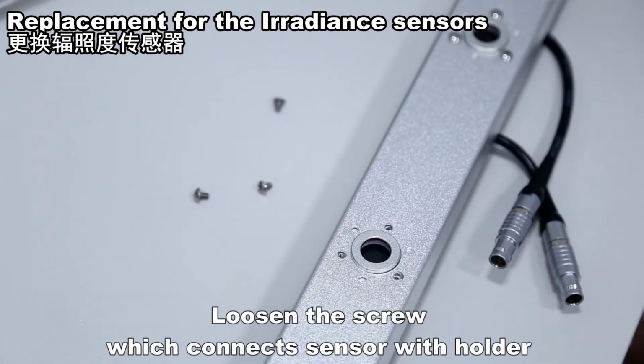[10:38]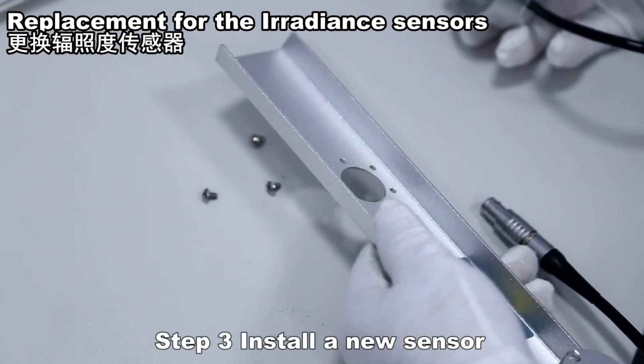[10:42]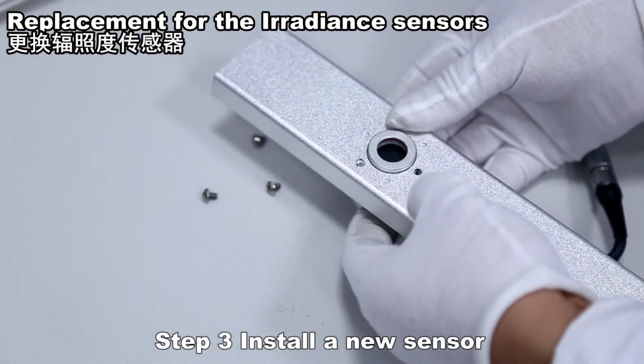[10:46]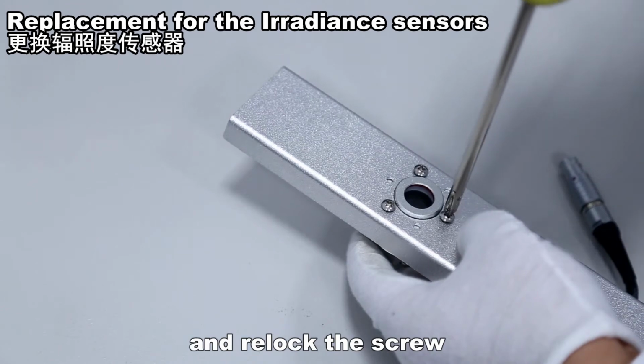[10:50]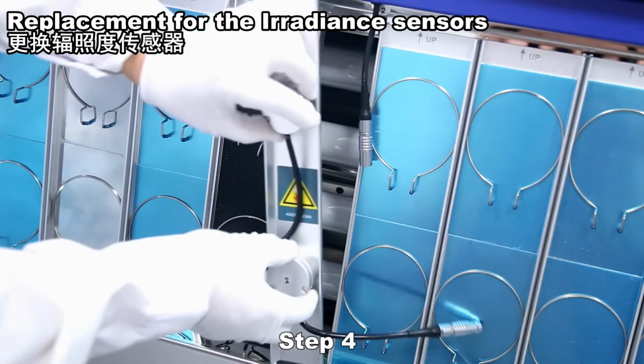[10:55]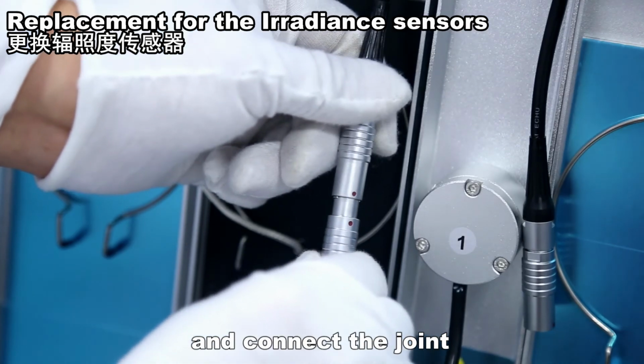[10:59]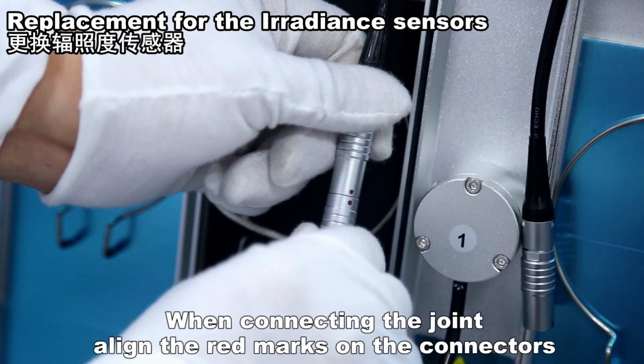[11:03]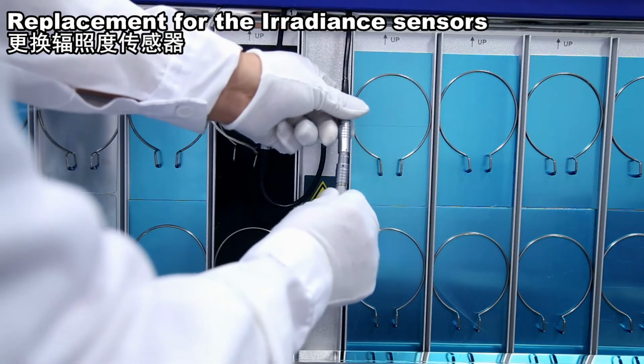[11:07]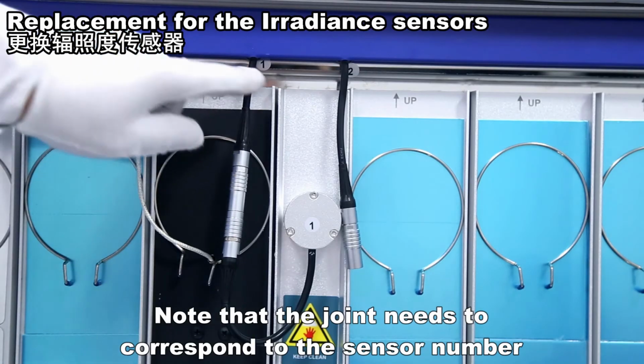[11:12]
Loosen the screw which connects the sensor with the holder. Take out the sensor. Install a new sensor and relock the screw. Put the sensor holder back in the middle and connect the joint. When connecting the joint, align the red marks on the connectors. Note that the joint needs to correspond to the sensor number.
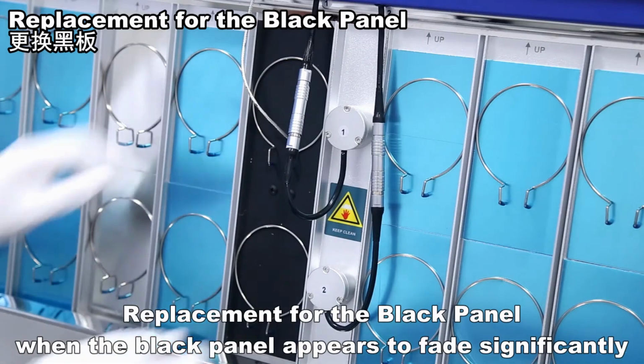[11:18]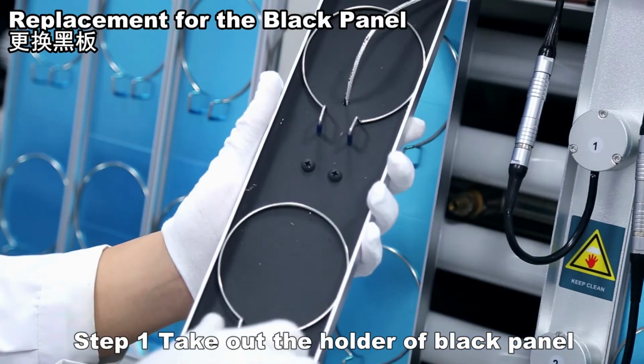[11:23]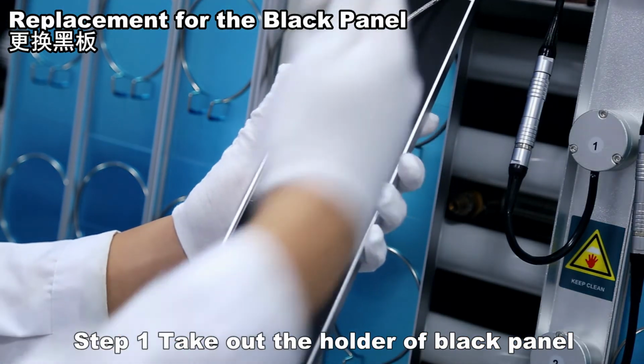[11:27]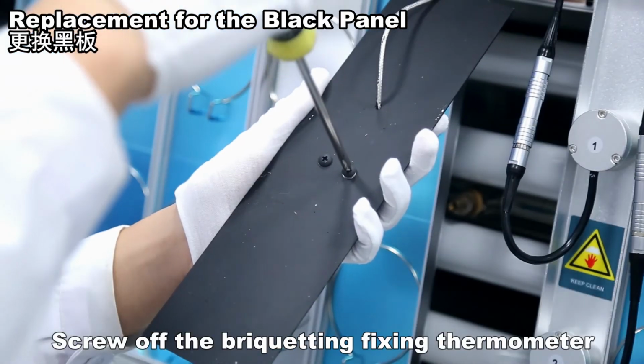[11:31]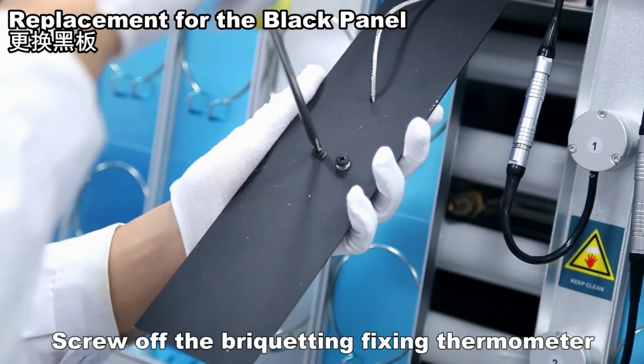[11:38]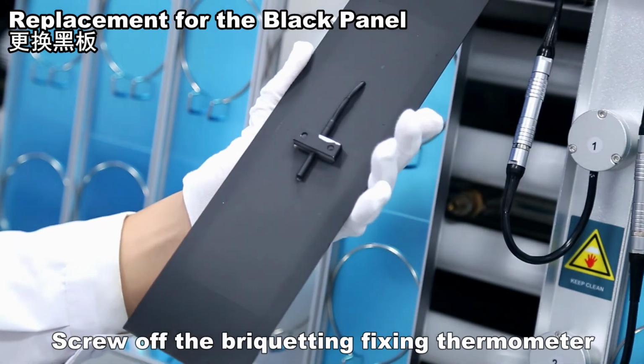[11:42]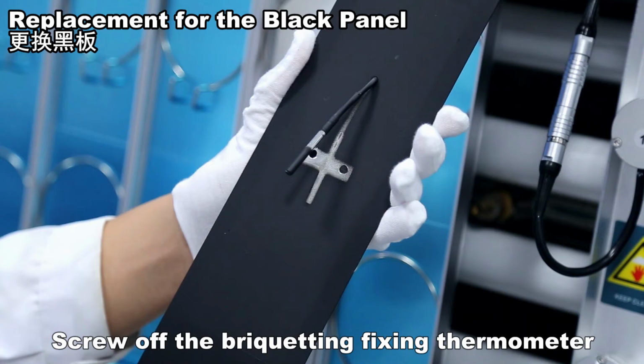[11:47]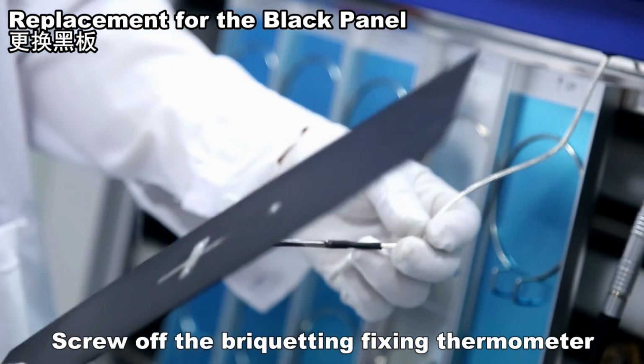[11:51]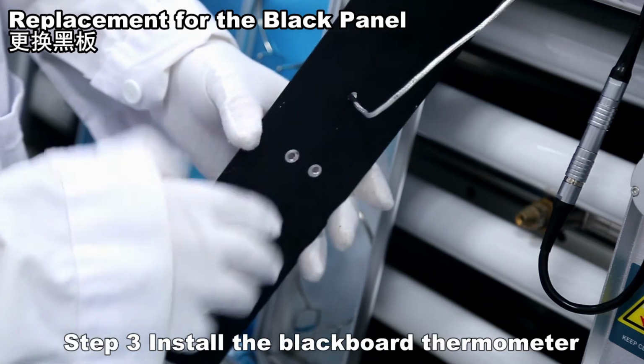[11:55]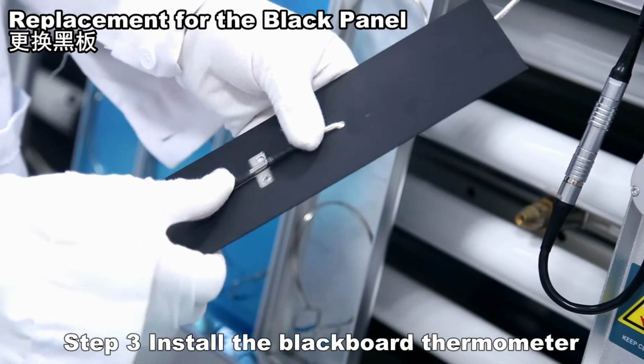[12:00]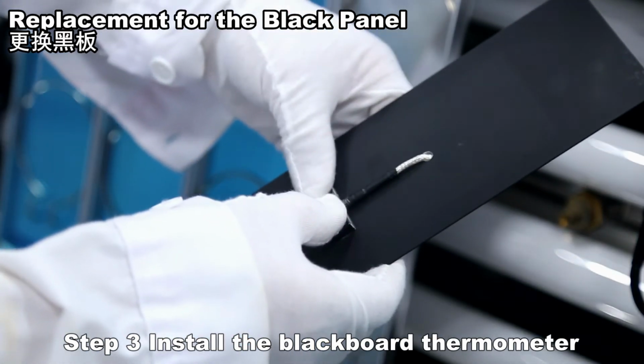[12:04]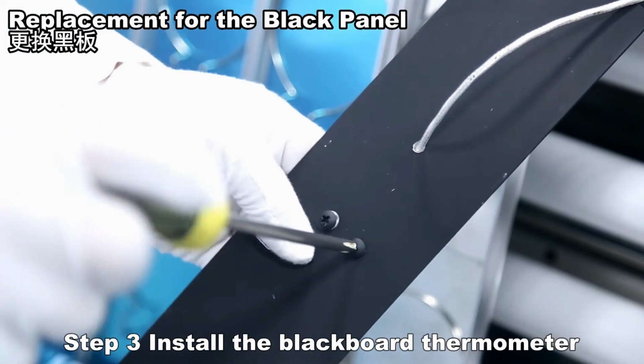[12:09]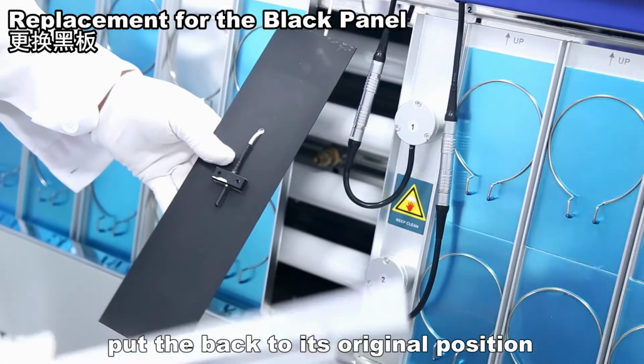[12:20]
Replacement for the black panel. When the black panel appears to fade significantly, take out the holder of the black panel. Screw off the bracket fixing the thermometer, and replace with a new black panel. Install the black panel thermometer. Put the holder back to its original position.
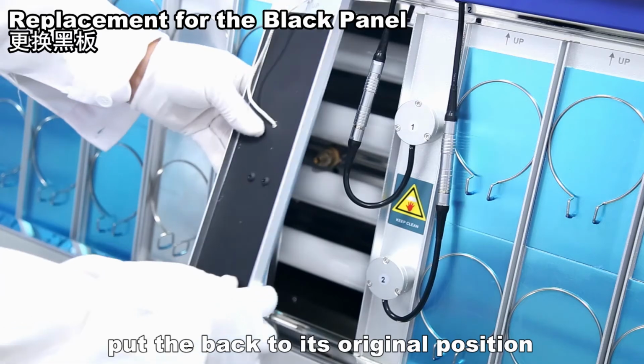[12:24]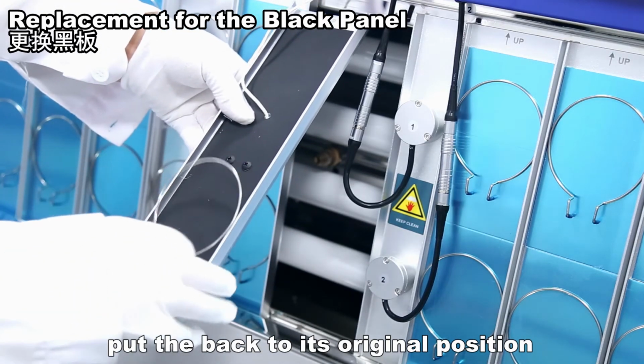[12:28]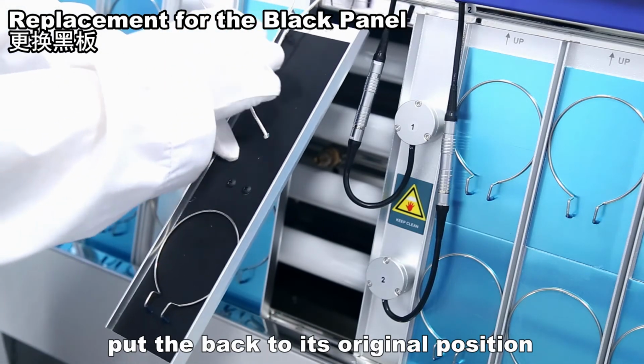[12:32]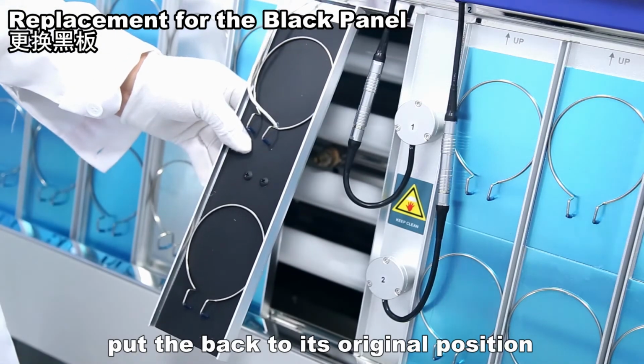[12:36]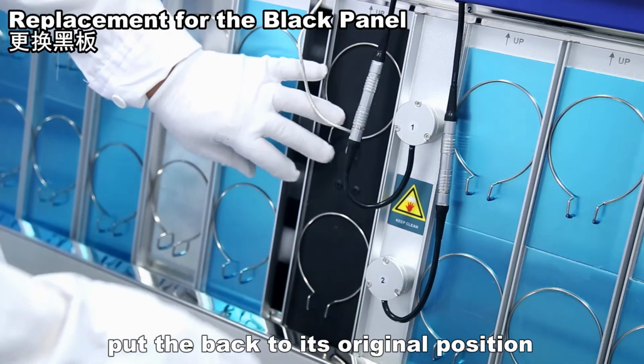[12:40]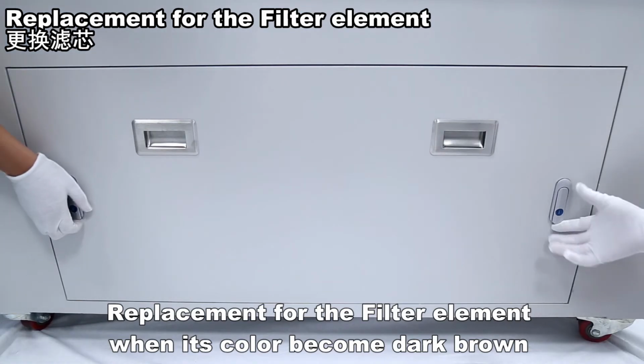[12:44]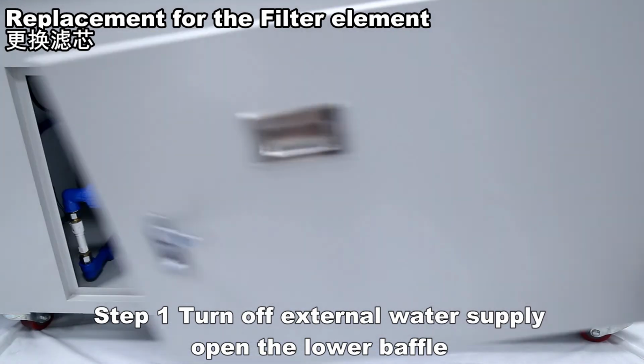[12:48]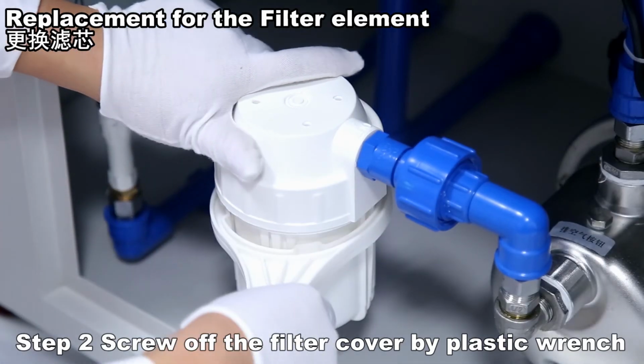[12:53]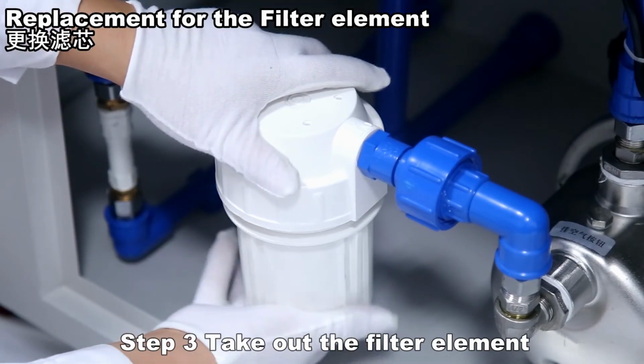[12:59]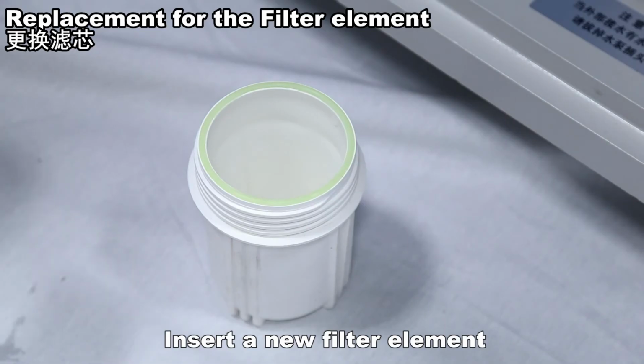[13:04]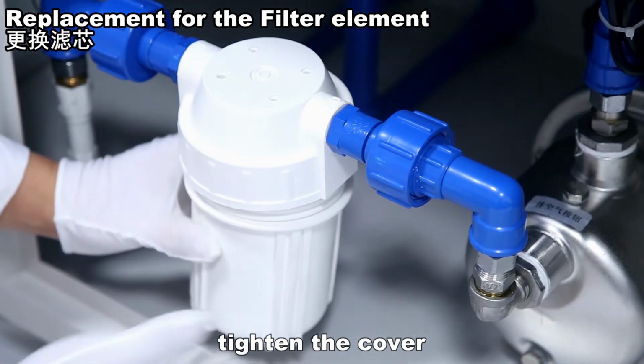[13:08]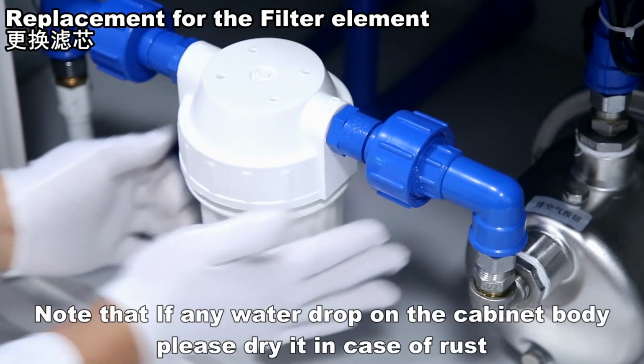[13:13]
Replacement for the filter element. When its color becomes dark brown, turn off the external water supply, open the lower baffle, and screw off the filter cover with a plastic wrench. Take out the filter element. Insert a new filter element and tighten the cover. Note that if any water drops on the cabinet body, please dry it in case of rust.
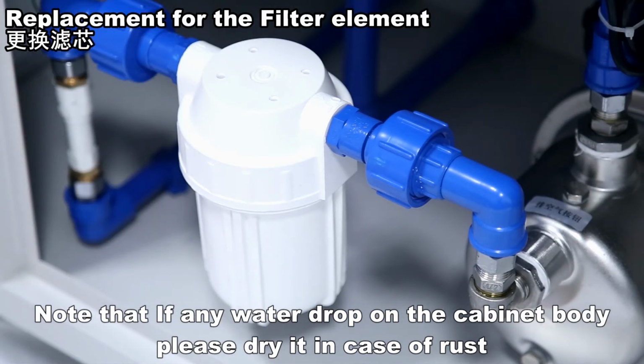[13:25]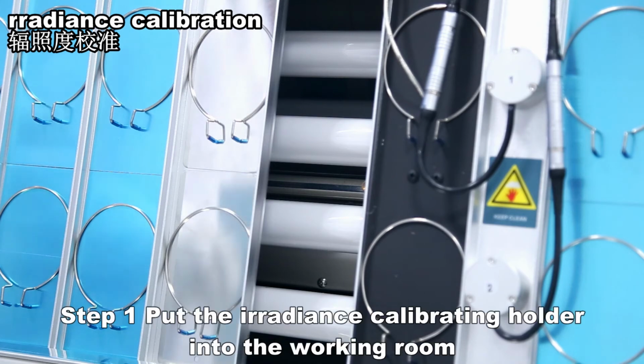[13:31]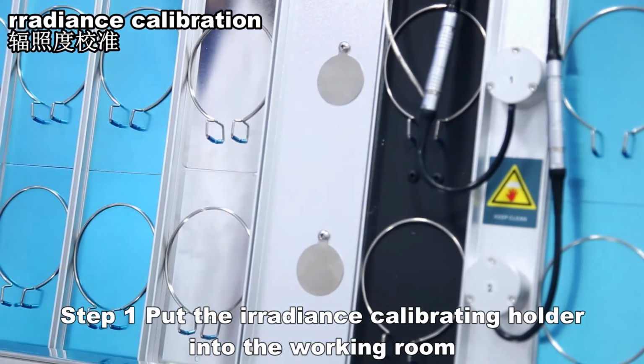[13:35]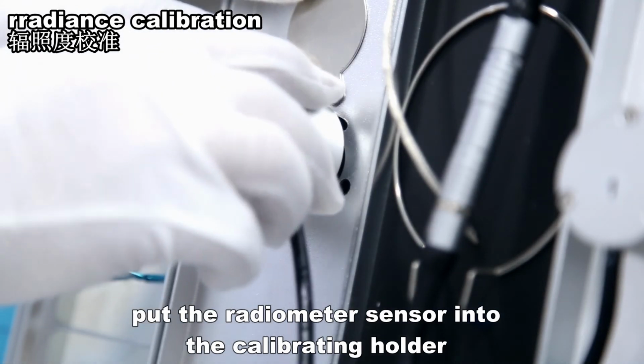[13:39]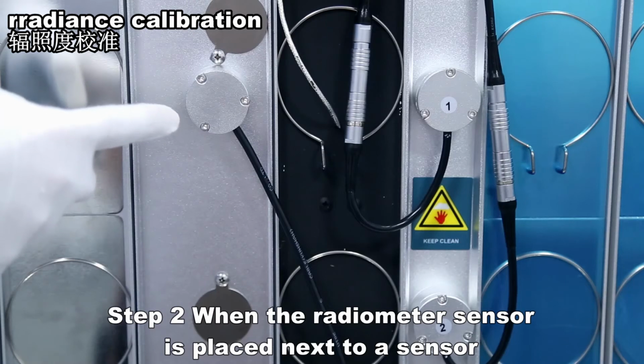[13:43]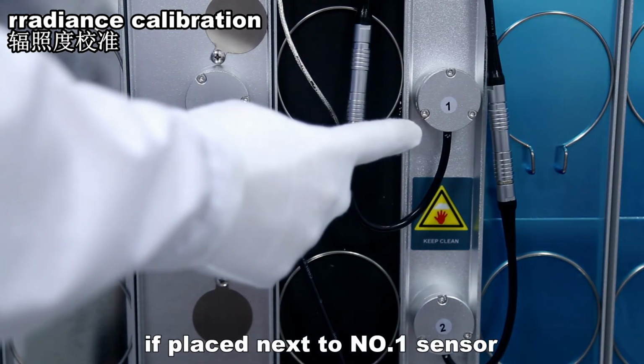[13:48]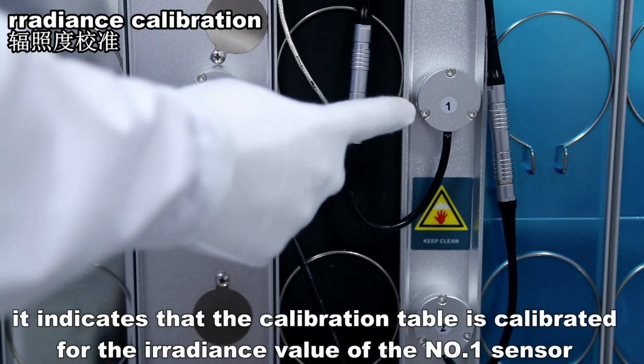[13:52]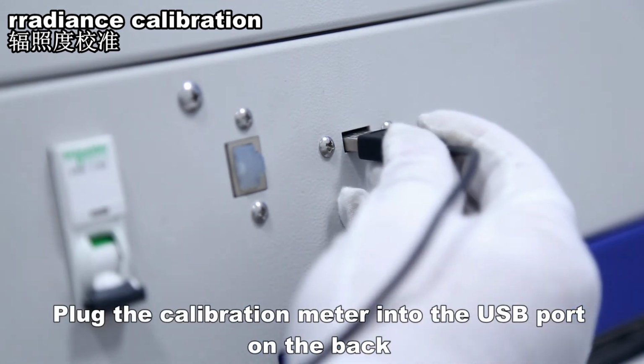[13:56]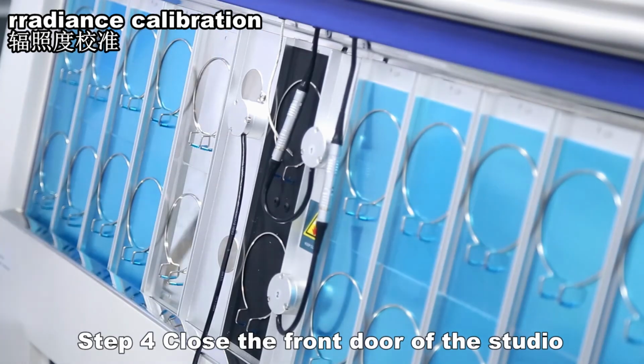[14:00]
Irradiance calibration. Put the irradiance calibrating holder into the working room. Put the radiometer sensor into the calibrating holder. When the radiometer sensor is placed next to a sensor, for example next to the number 1 sensor, it indicates that the calibration table is calibrated for the irradiance value of the number 1 sensor. Plug the calibration meter into the USB port on the back.
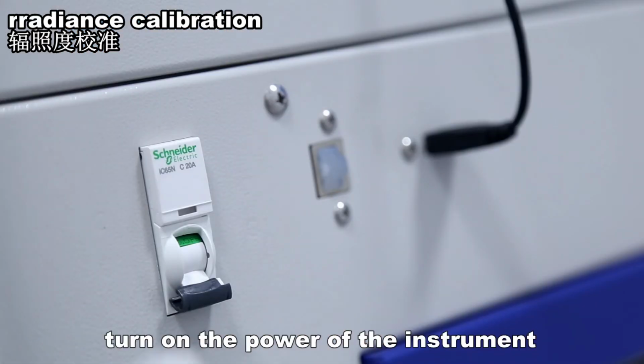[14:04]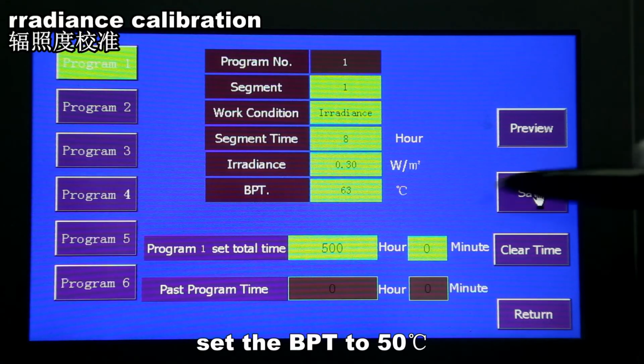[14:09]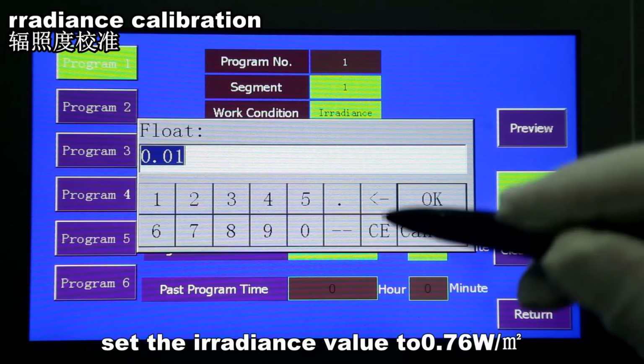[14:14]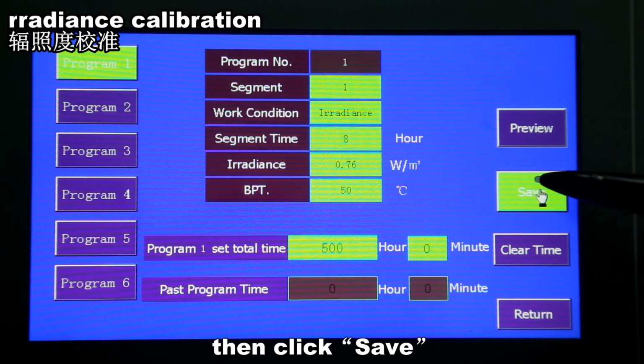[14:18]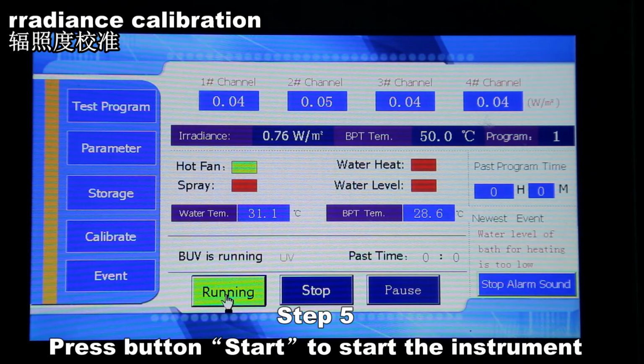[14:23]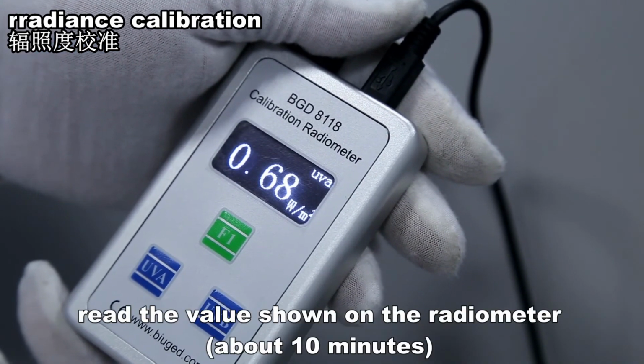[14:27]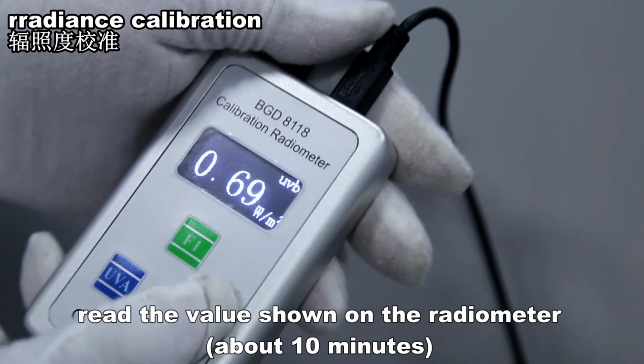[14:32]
Close the front door of the studio and turn on the power of the instrument. Set the BPT to 50 degrees Celsius. Set the irradiance value to 0.76 W/m², then click Save. Press the Start button to start the instrument. After the black panel temperature becomes stable, which needs 10 minutes, read the value shown on the radiometer. Select the same type of reading as the lamp.
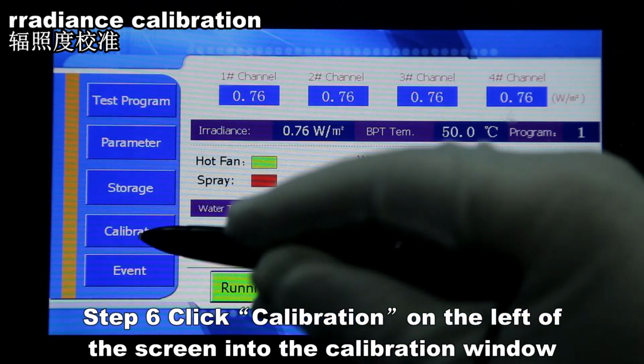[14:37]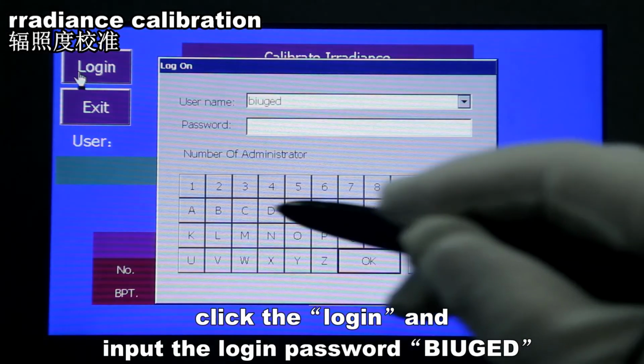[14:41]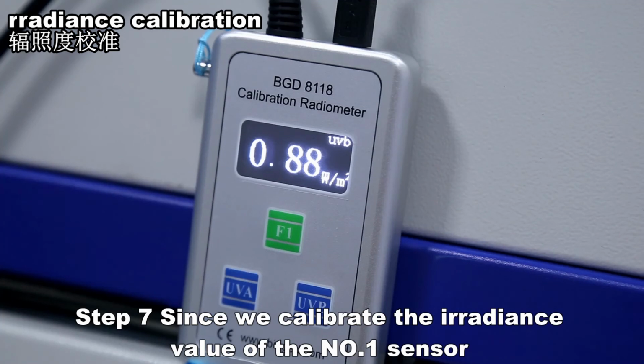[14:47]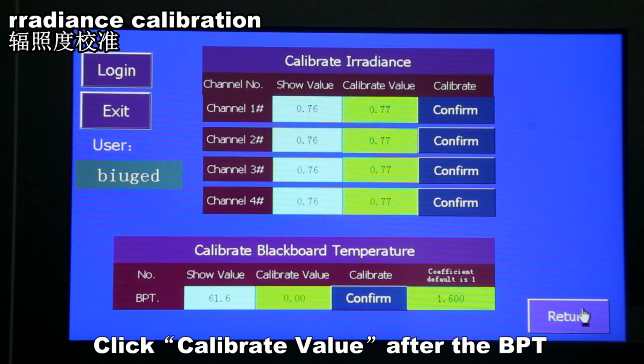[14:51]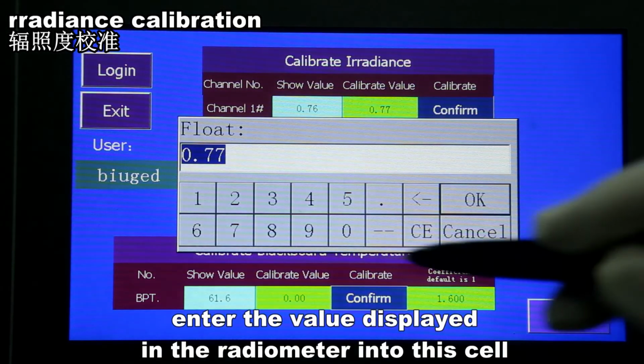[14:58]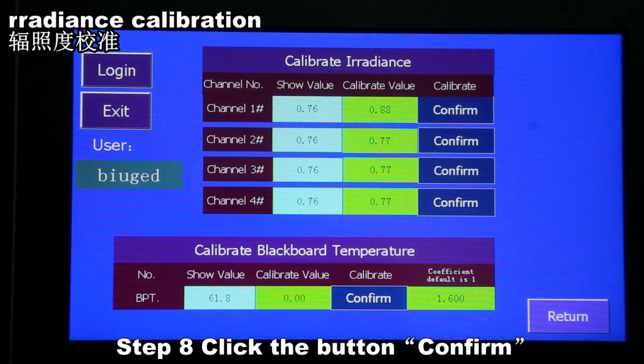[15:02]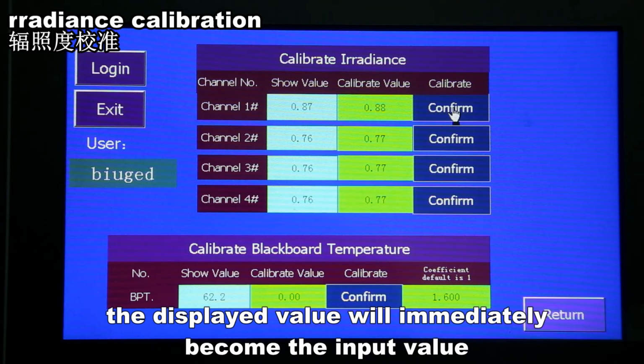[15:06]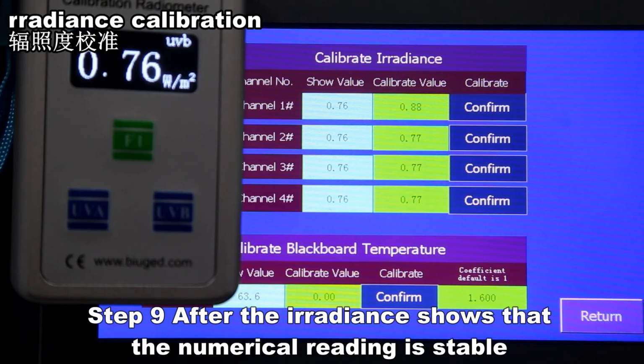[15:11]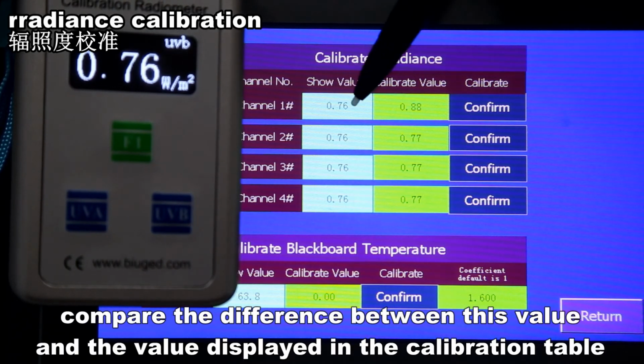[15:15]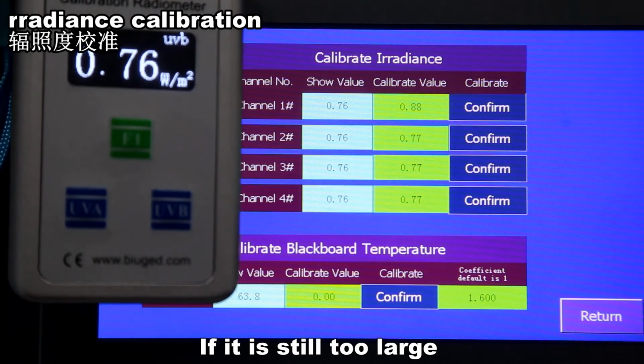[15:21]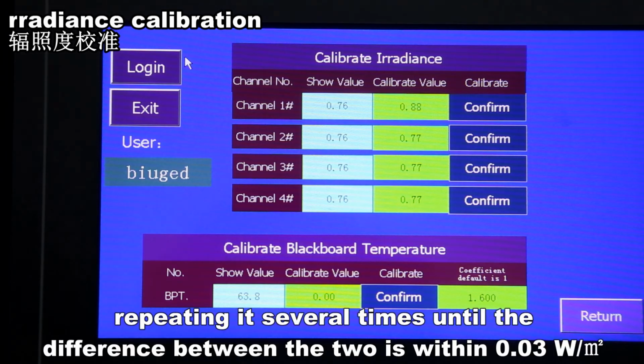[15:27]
After the irradiance shows that the numerical reading is stable, compare the difference between this value and the value displayed in the calibration table. If it is still too large, enter the calibration value again and perform the calibration, repeating it several times until the difference between the two is within 0.03 W/m².
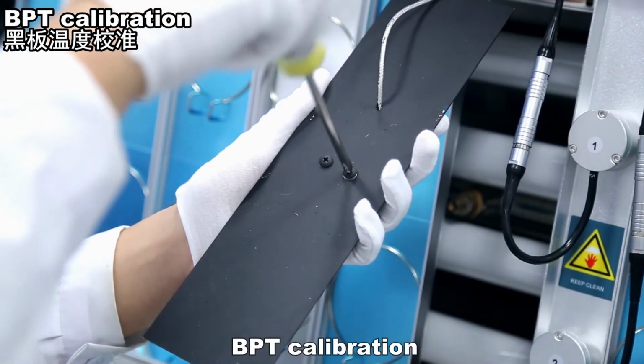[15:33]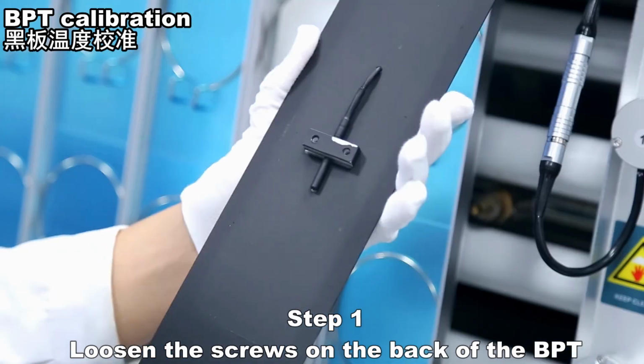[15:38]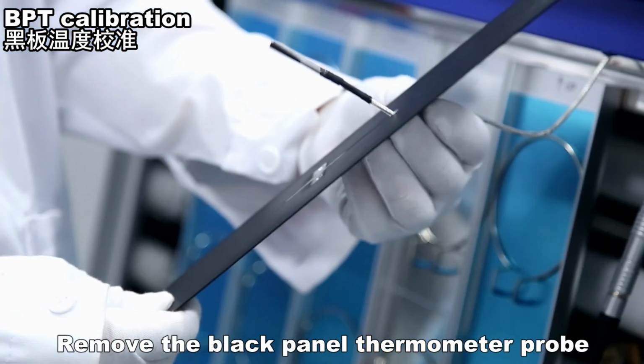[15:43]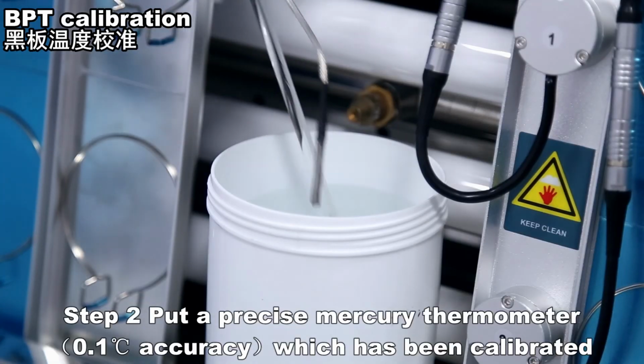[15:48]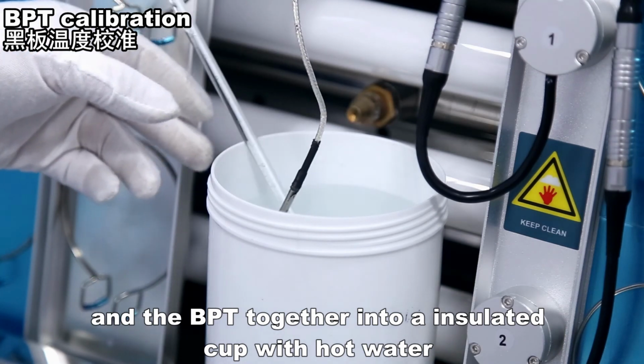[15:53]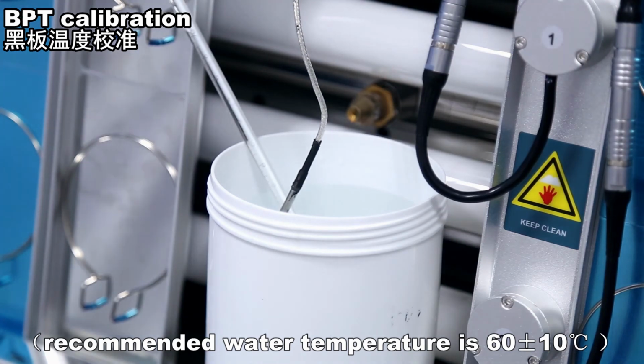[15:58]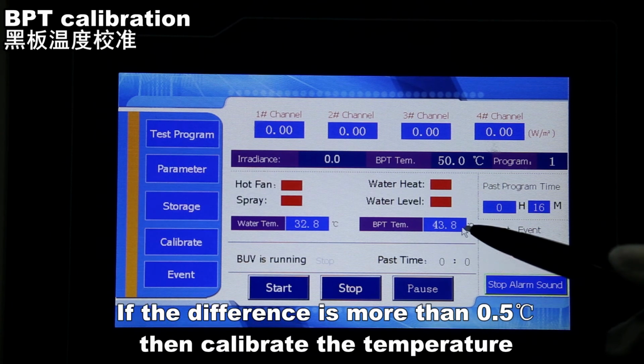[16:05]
BPT calibration. Loosen the screws on the back of the BPT. Remove the black panel thermometer probe. Put a precise mercury thermometer which has been calibrated and the BPT together into an insulated cup with hot water. Recommended water temperature is 60 plus or minus 10 degrees Celsius. Compare the mercury thermometer value with the instrument's shown value. If the difference is more than 0.5 degrees Celsius, then calibrate the temperature.
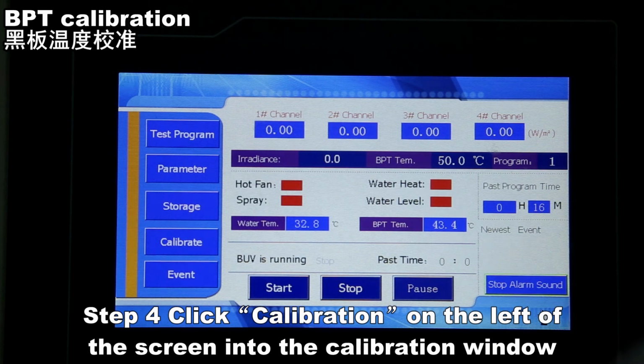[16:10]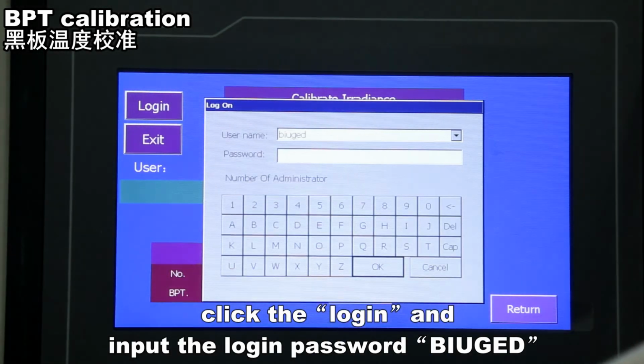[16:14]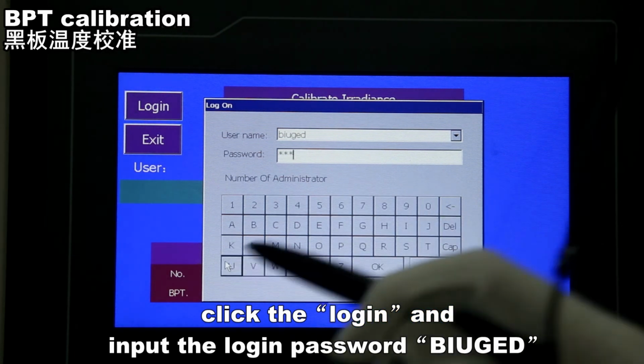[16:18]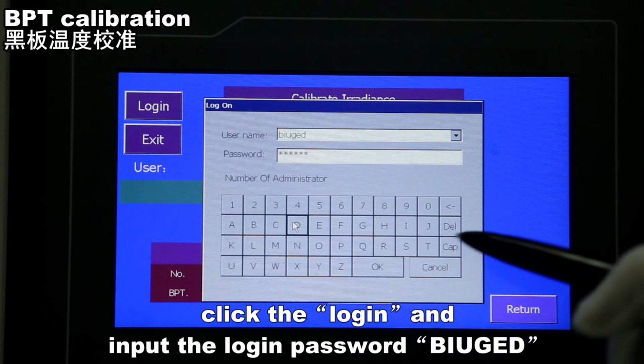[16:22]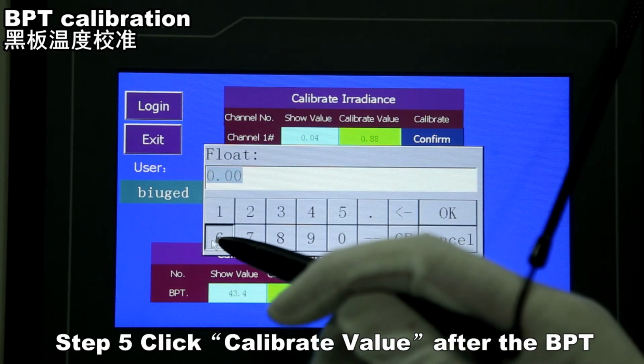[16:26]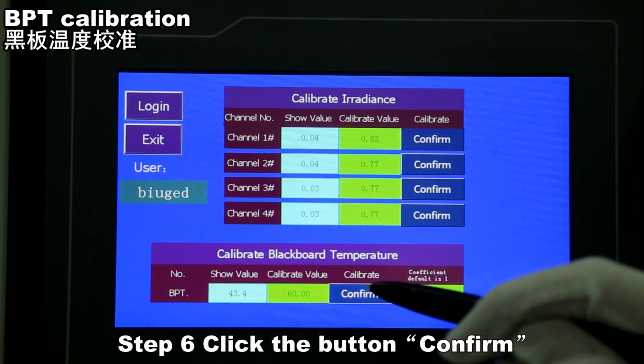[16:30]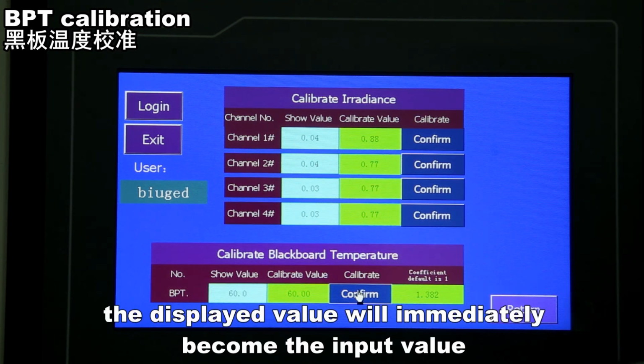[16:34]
Click calibration on the left of the screen to enter the calibration window. Click login and input the login password BIUGED. Click the calibrate value after the BPT. Enter the value displayed in the mercury thermometer into this cell. Click the confirm button. The displayed value will immediately become the input value. Calibration completed.